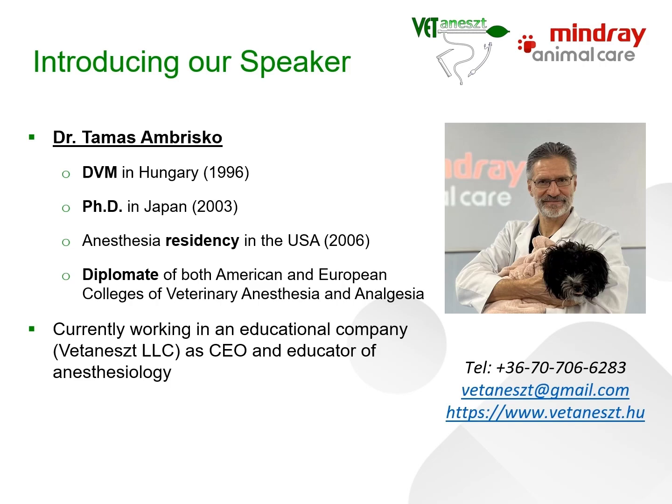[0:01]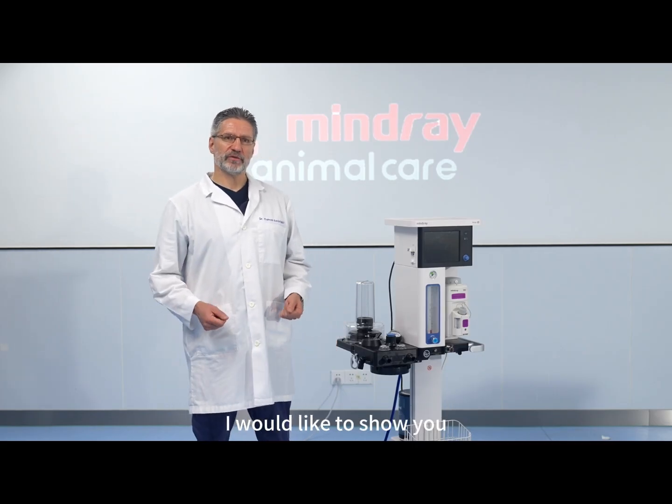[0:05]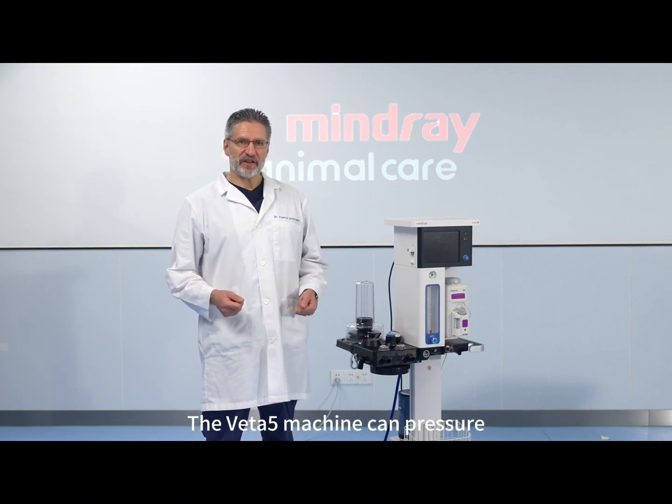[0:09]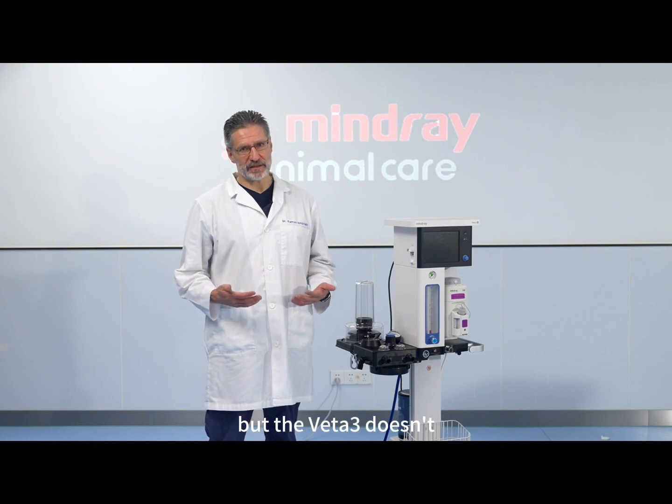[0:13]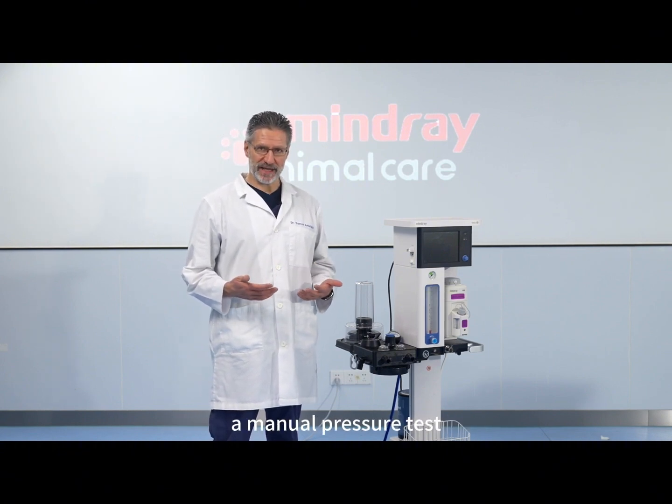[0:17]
In this video, I would like to show you the manual pressure test of the breathing system. The Veta 5 machine can pressure test the circuit automatically, but the Veta 3 doesn't. Hence, you need to be able to perform a manual pressure test.
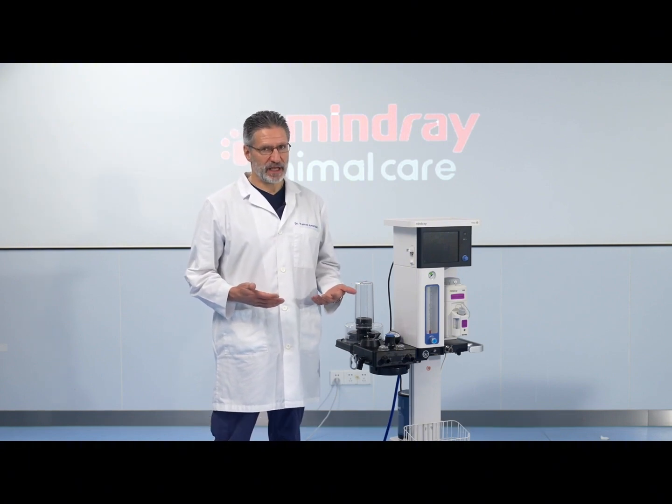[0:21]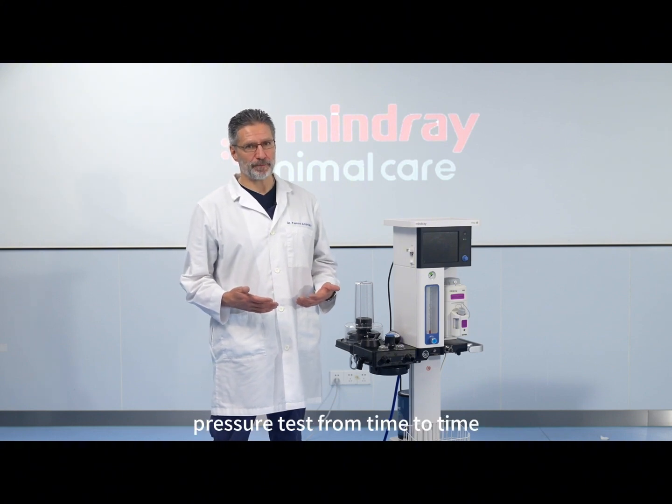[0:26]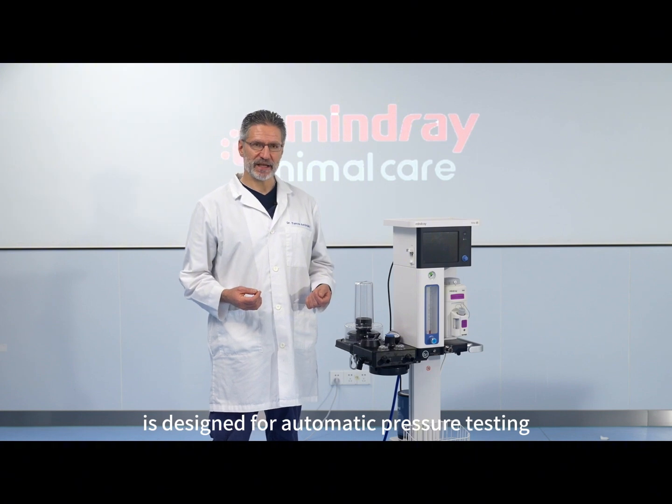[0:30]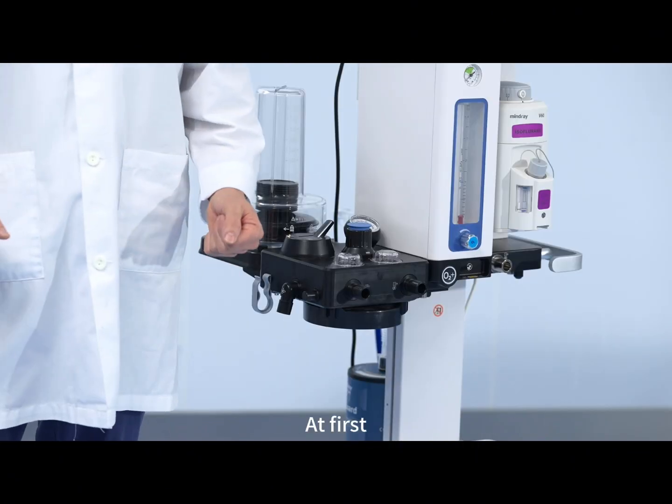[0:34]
Nevertheless, even after the automatic pressure test of the Veta 5, I recommend also performing a manual pressure test from time to time. Although the Veta 5 is designed for automatic pressure testing, a manual pressure test is still possible and useful. At first, you should properly assemble the whole breathing system.
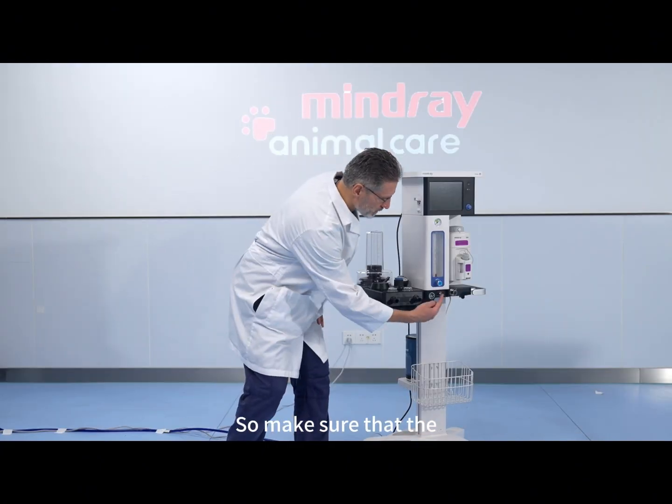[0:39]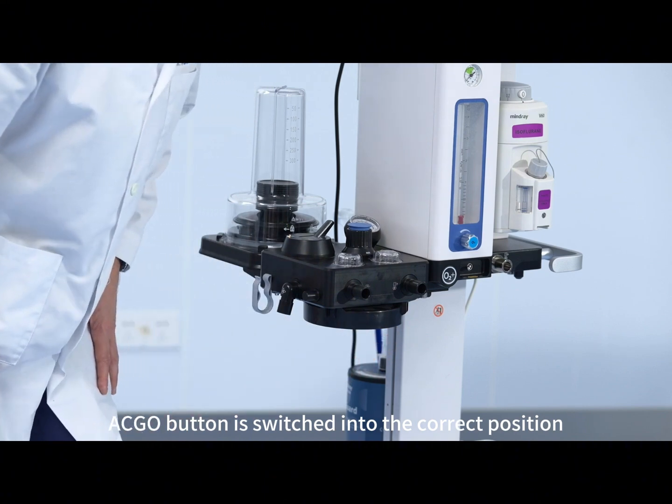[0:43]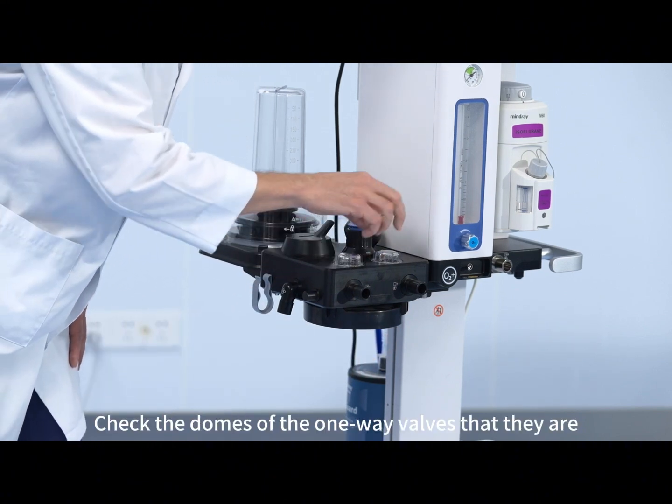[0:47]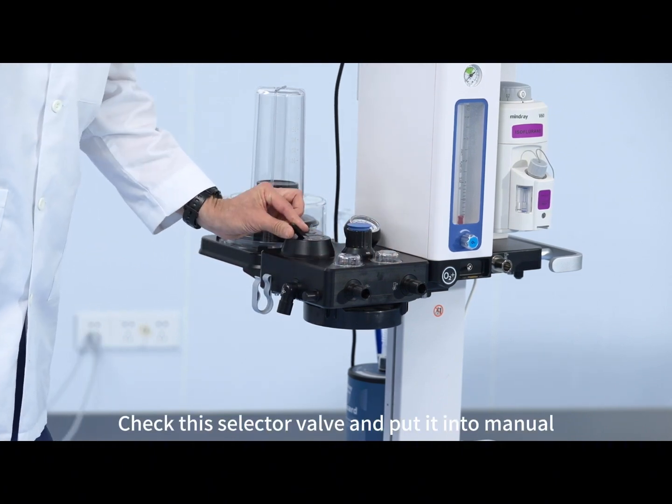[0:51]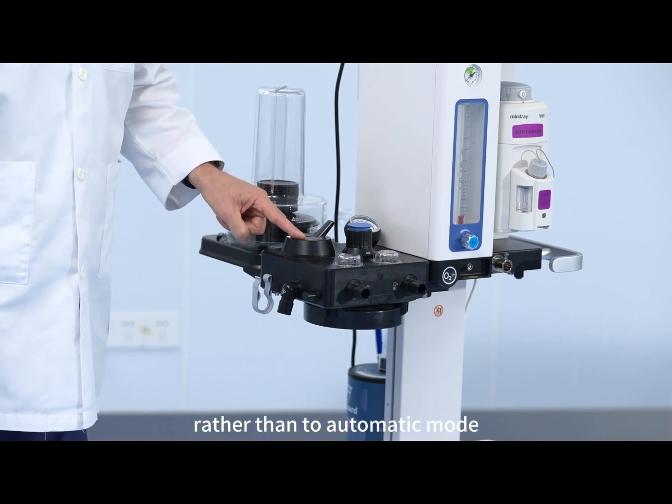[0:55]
So make sure that the ACGO button is switched into the correct position. Check the domes of the one-way valves that they are secured in position. Check this selector valve and put it into manual rather than automatic mode.
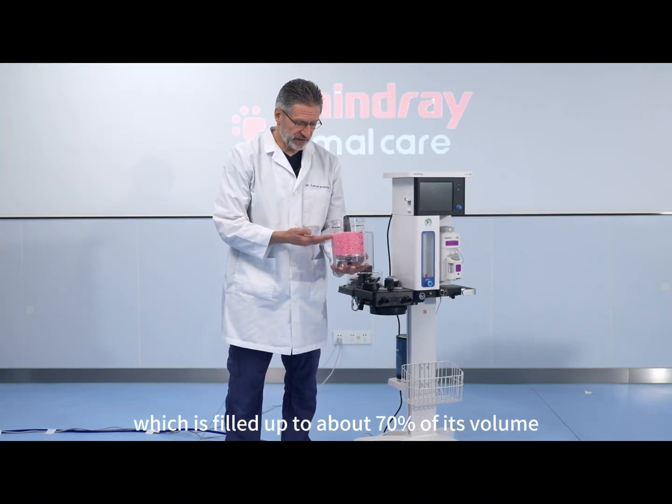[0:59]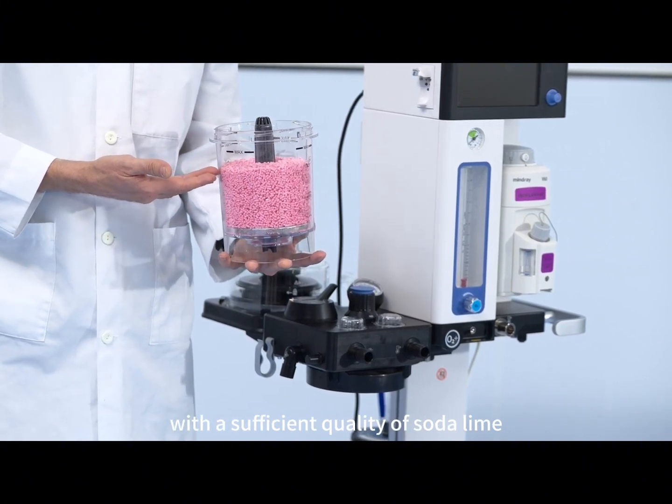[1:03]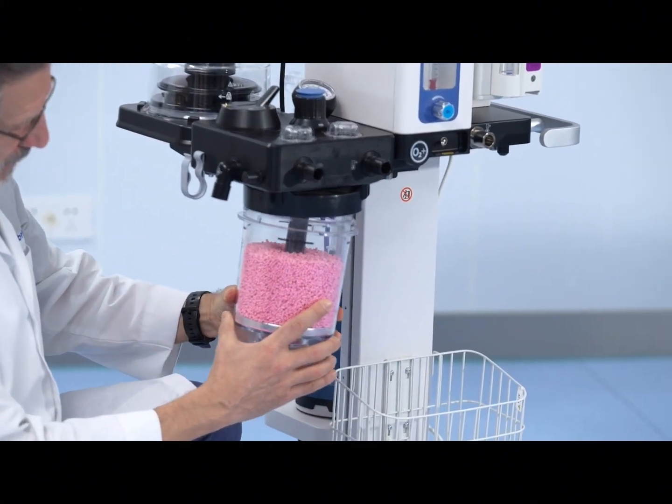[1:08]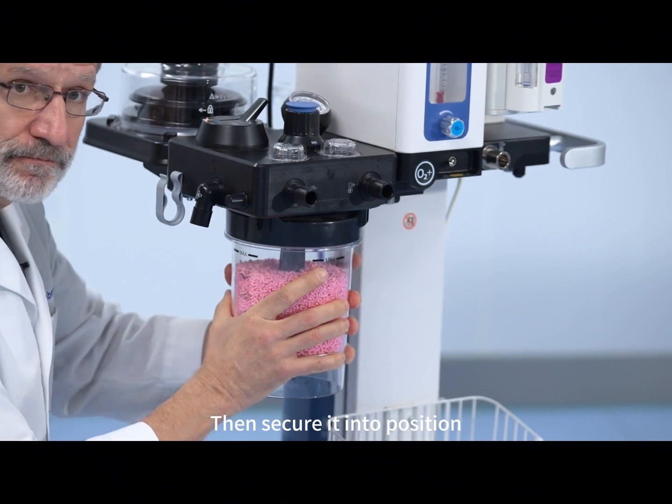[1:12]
You should have a soda lime canister which is filled up to about 70% of its volume with a sufficient quality of soda lime. Then secure it into position, make sure it's airtight.
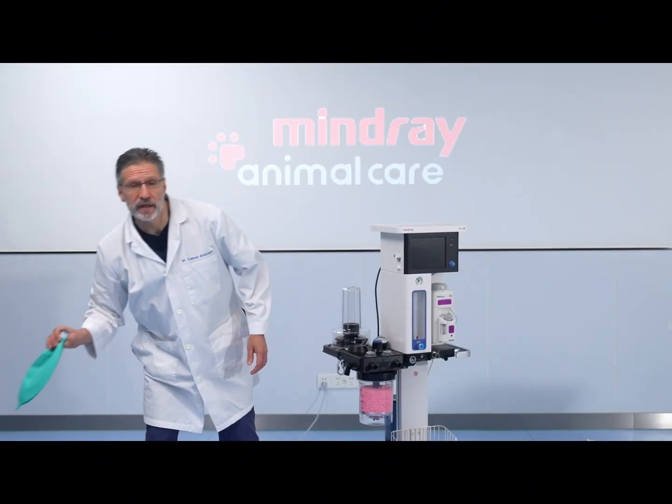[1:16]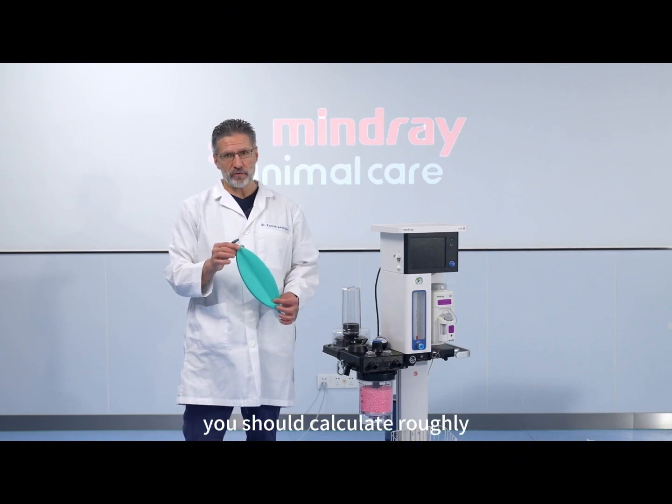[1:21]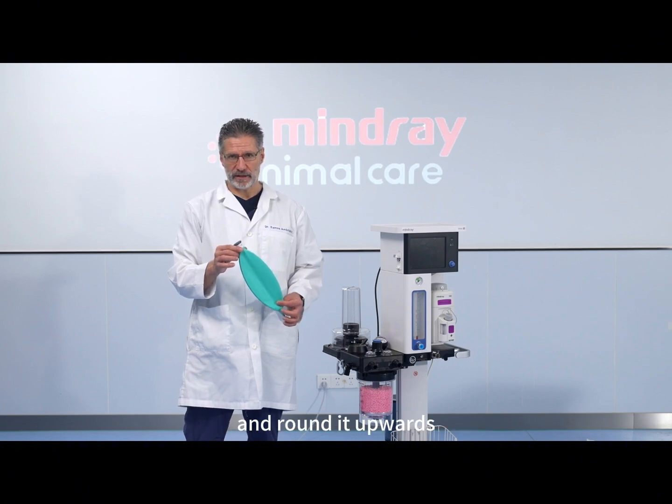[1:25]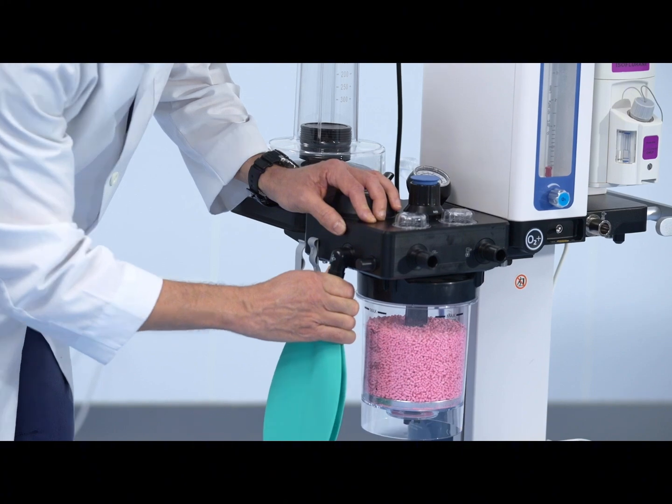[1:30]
Then you should pick an appropriately sized breathing bag. You should calculate roughly 1 liter for every 10 kg of body weight and round it upwards. Secure it into position nice and tight.
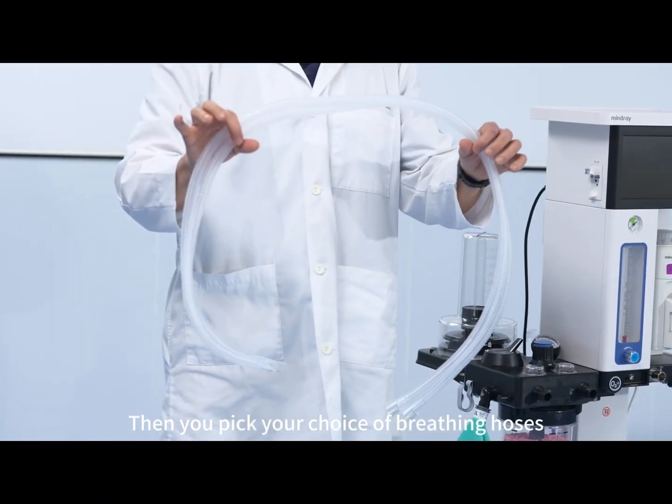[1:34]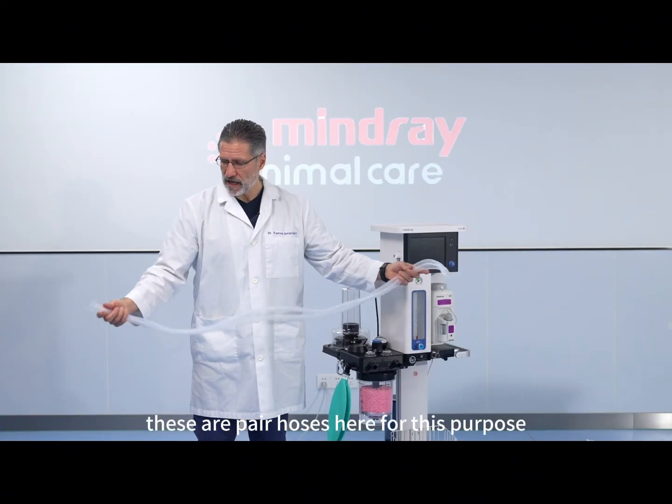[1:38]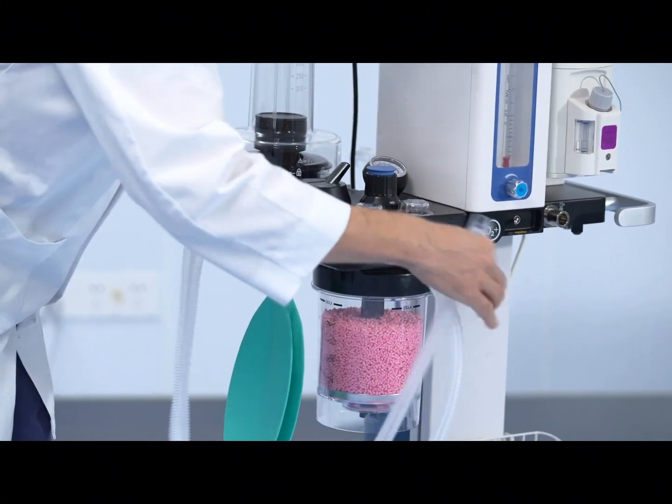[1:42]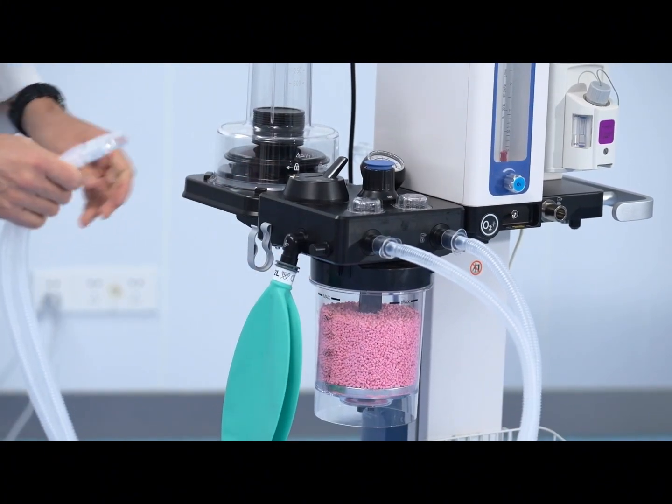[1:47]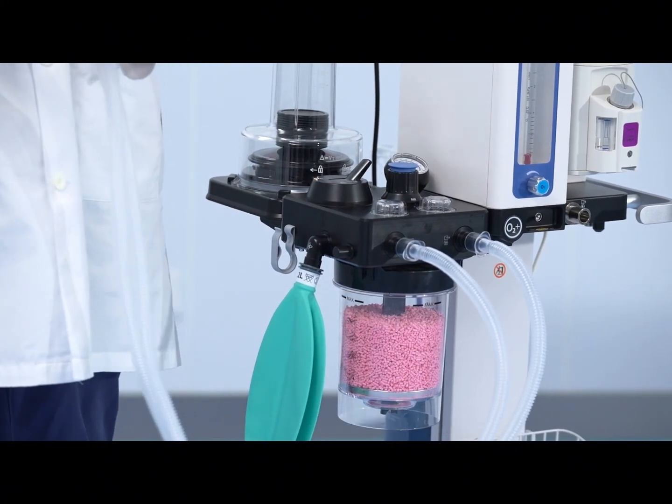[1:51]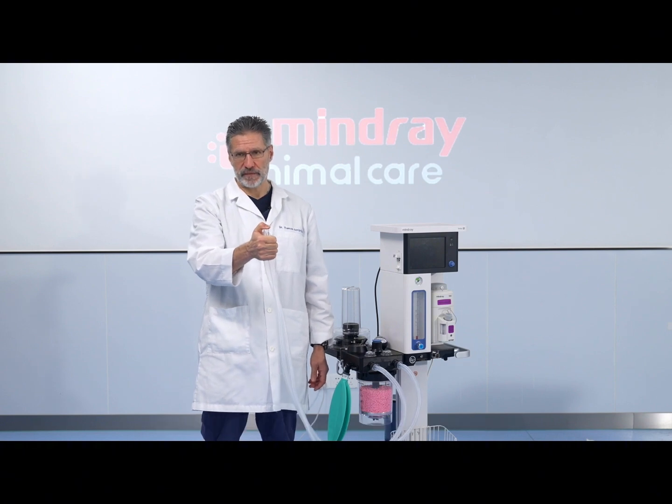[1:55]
Then you pick your choice of breathing hoses. These are paired hoses here for this purpose. Plug them into the inspiratory and the expiratory hose port, and then you have two choices. Classically, you plug in the Y-piece with your finger to make the system closed airtight.
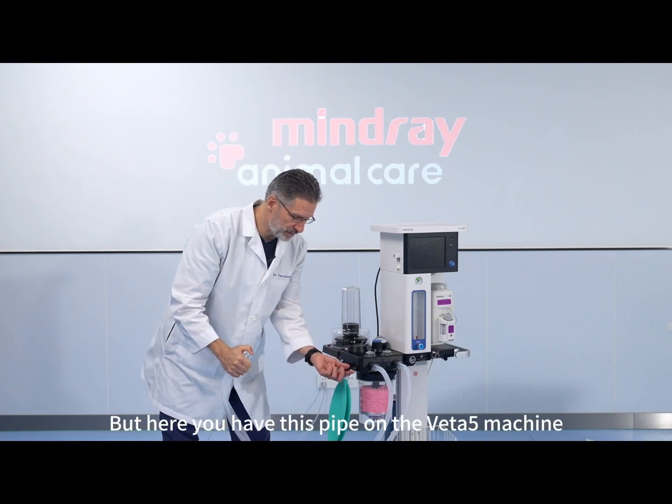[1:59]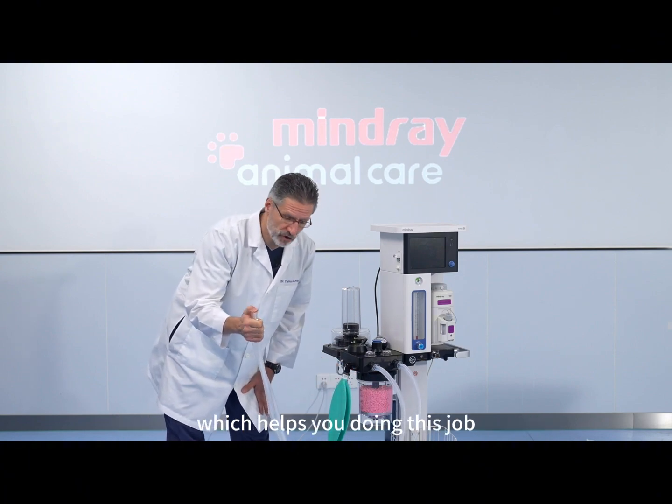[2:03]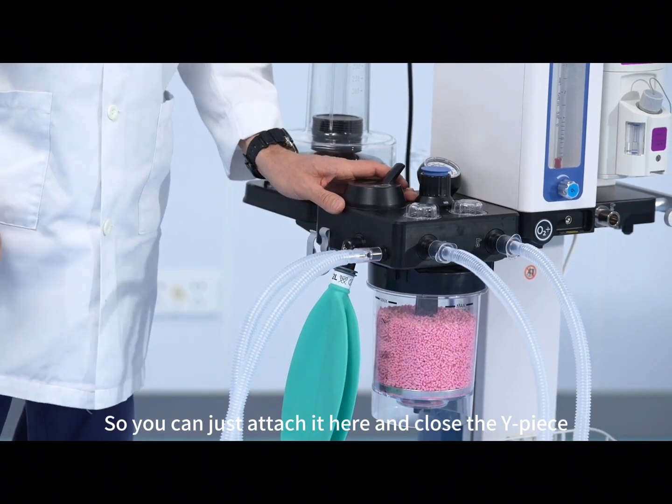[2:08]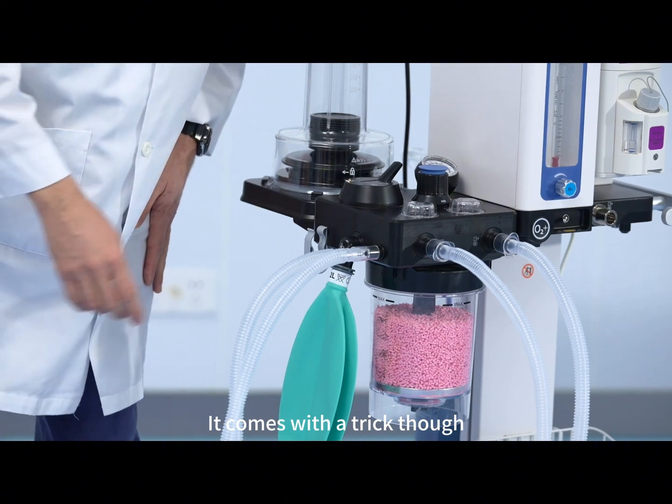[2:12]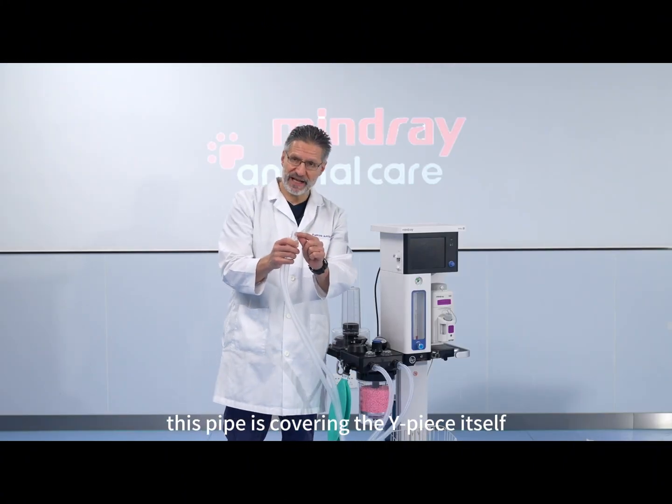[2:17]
But here you have this pipe on the Veta 5 machine which helps you do this job. So you can just attach it here and close the Y-piece airtight. It frees up your hand. It comes with a trick though. This pipe is covering the Y-piece itself.
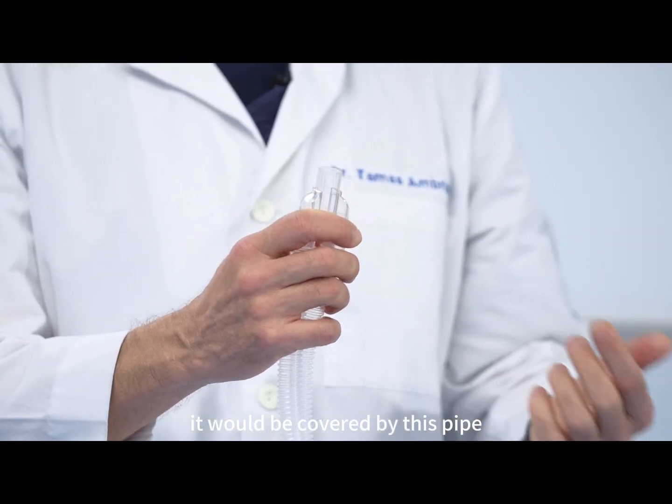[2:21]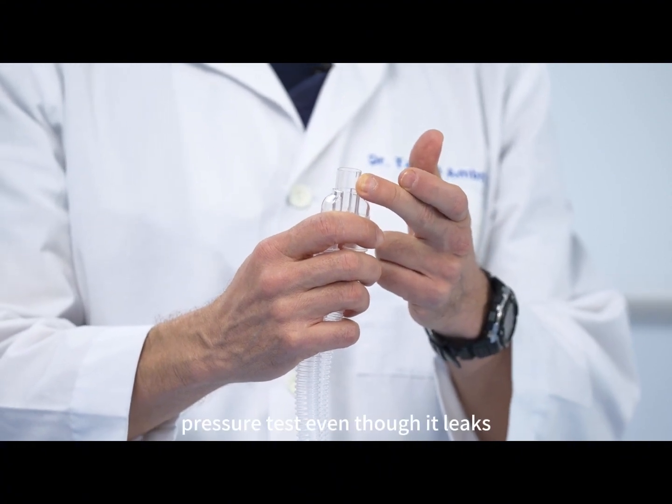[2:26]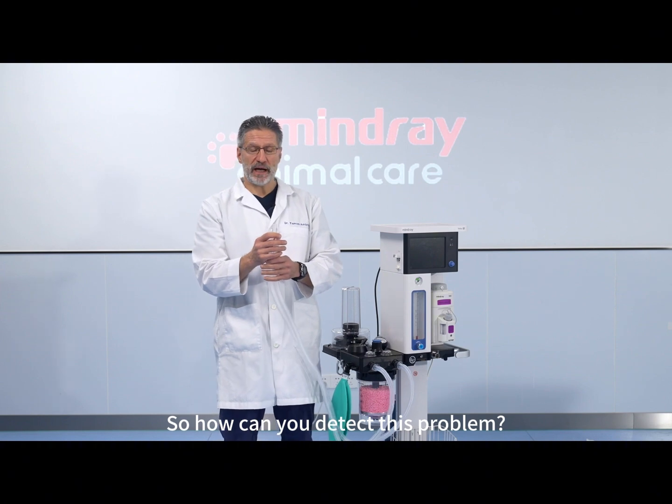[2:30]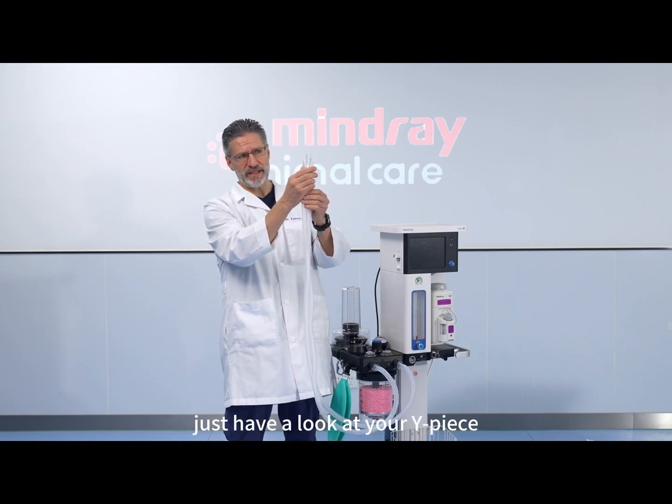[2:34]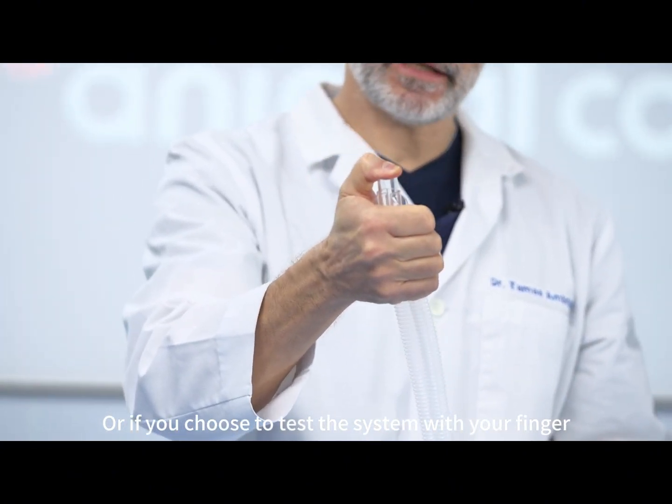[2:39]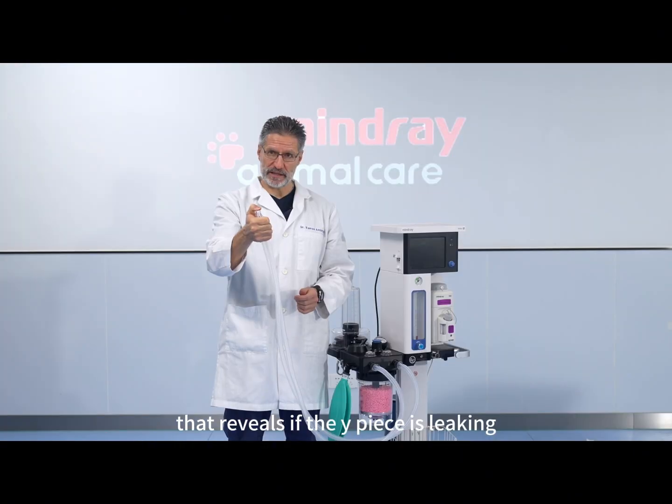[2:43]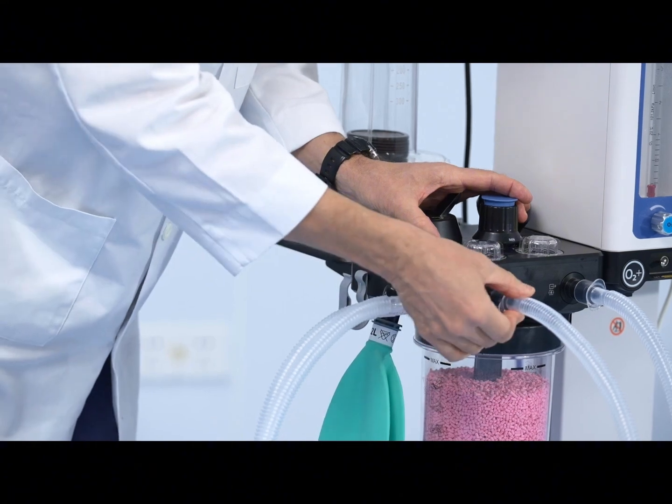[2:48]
So if you have a small crack on the Y-piece, it would be covered by this pipe and it would pass the pressure test even though it leaks. So how can you detect this problem? Very simple, just have a look at your Y-piece and you will see the crack. Or if you choose to test the system with your finger, that reveals if the Y-piece is leaking. For now, let's just use this pipe. It makes the pressure test so much easier.
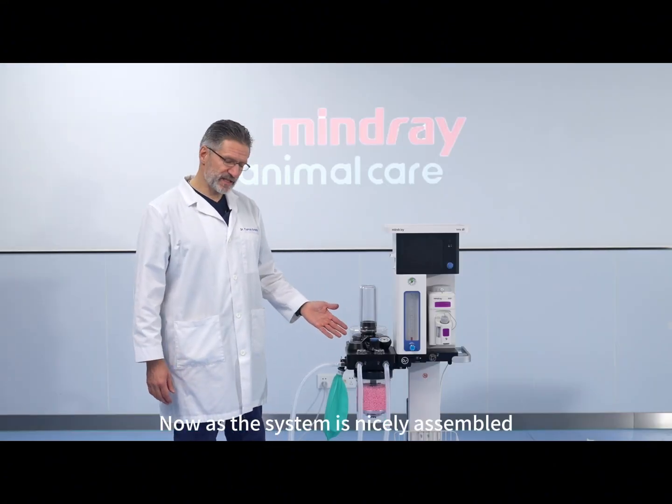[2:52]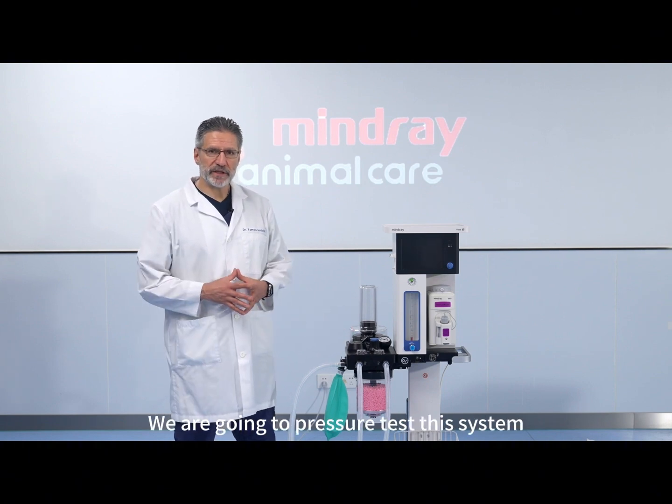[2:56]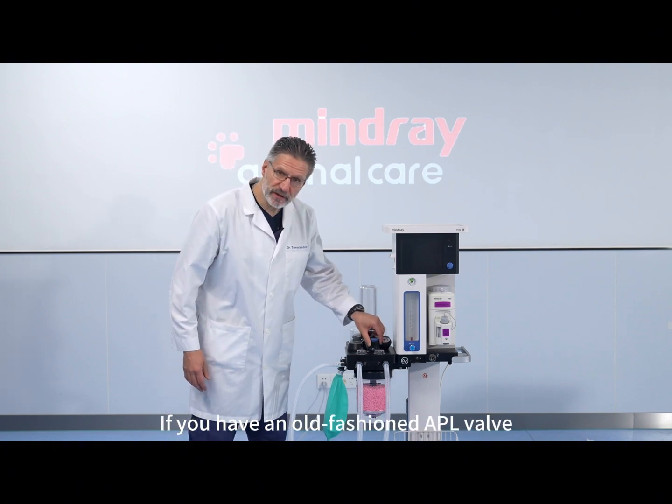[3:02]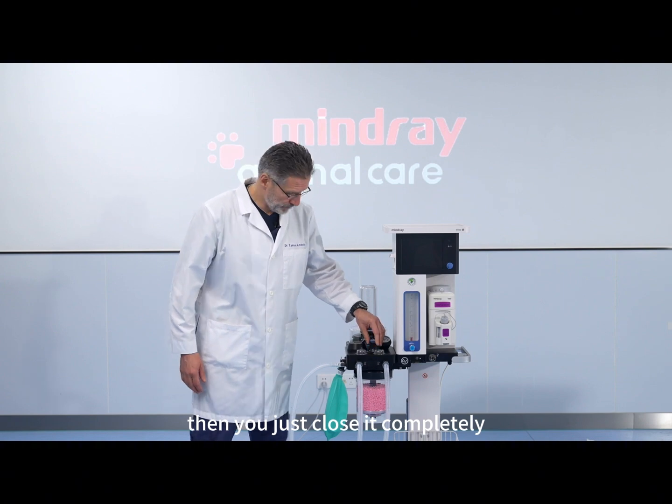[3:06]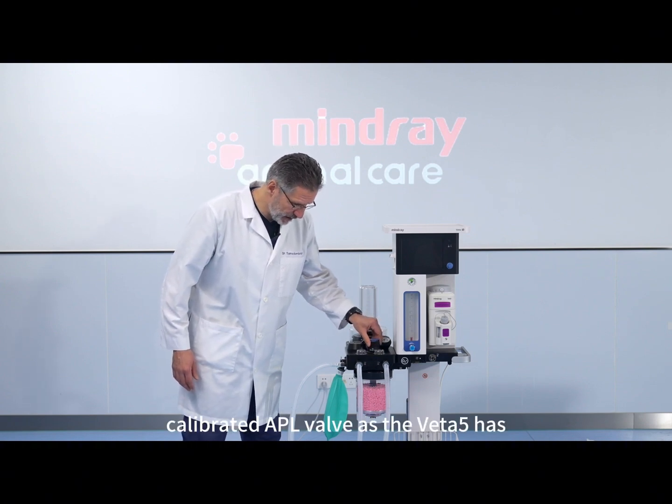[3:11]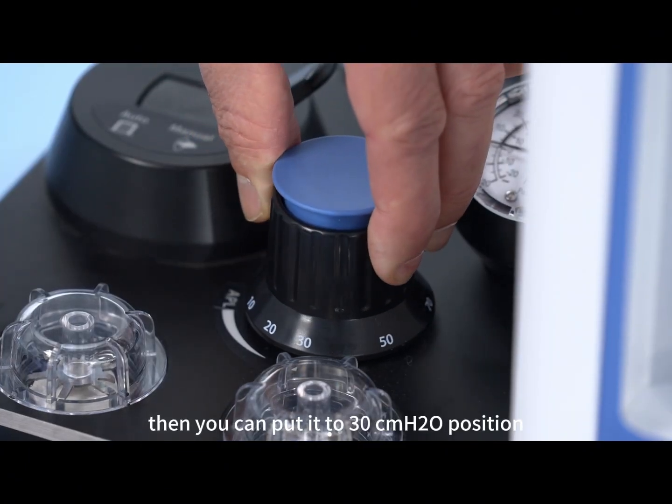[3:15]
Now, as the system is nicely assembled, let's do the actual pressure test. We are going to pressure test this system at about 30 centimeters of water pressure. If you have an old-fashioned APL valve, then you just close it completely. But if you have such a nicely calibrated APL valve as the Veta 5 has, then you can put it to the 30 centimeters of water position.
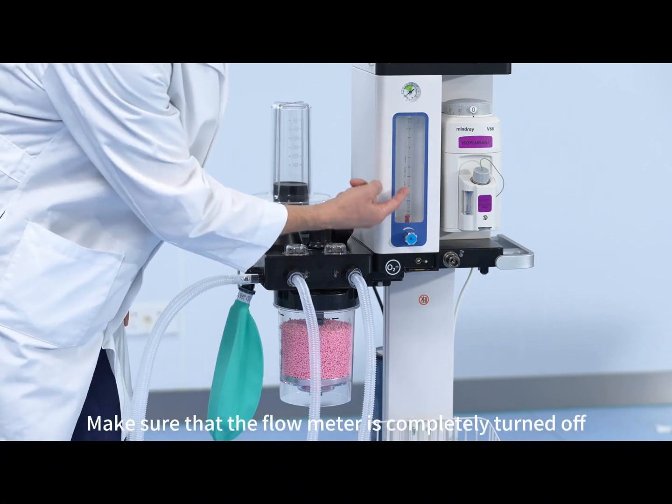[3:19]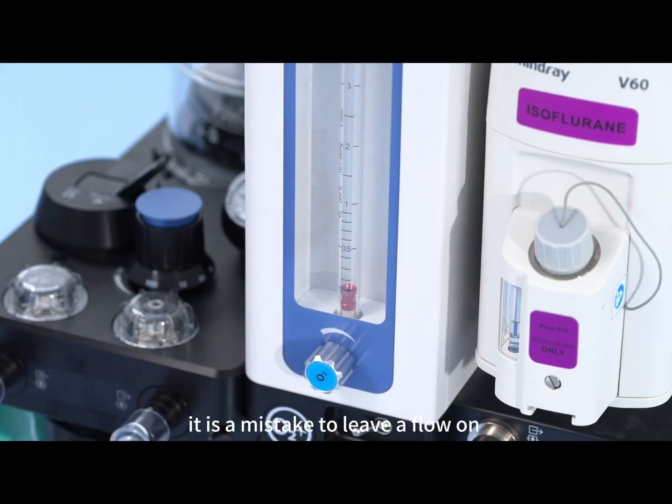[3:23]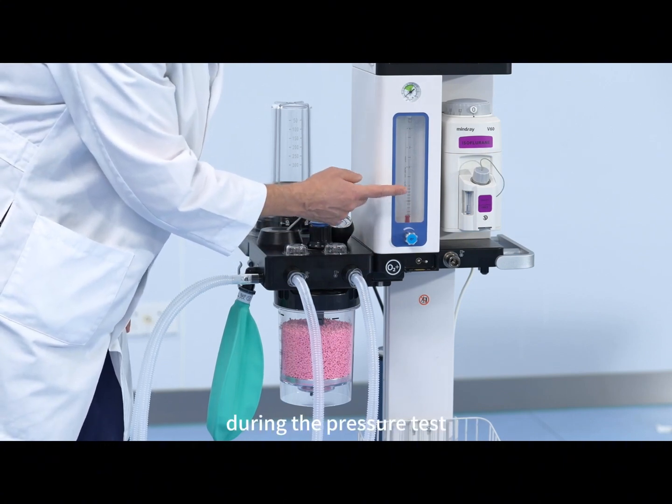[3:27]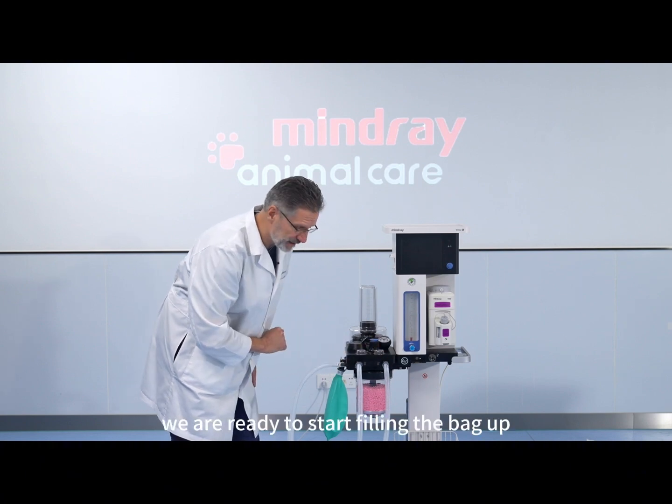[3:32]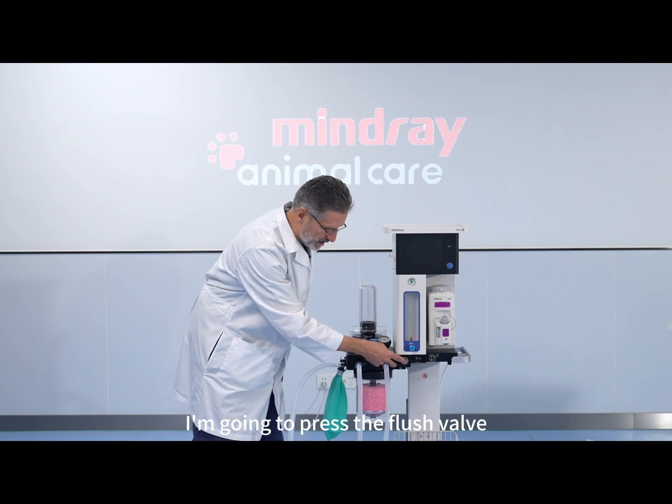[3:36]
Make sure that the flow meter is completely turned off. It is a mistake to leave a flow on during the pressure test. Now we are ready to start filling the bag up. As you see, this is empty now. I'm going to press the flush valve to fill this up.
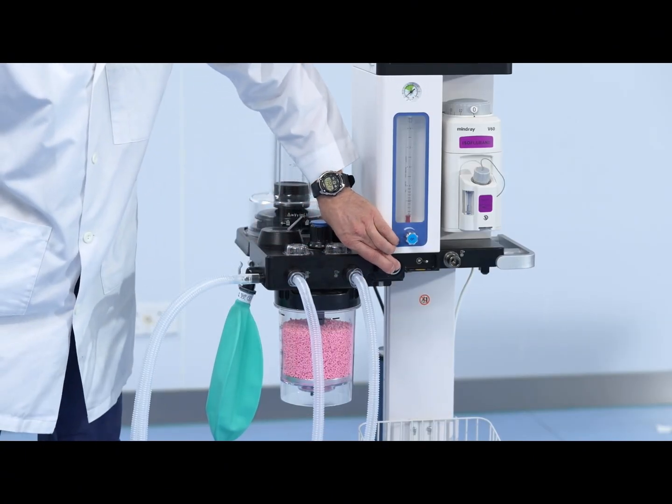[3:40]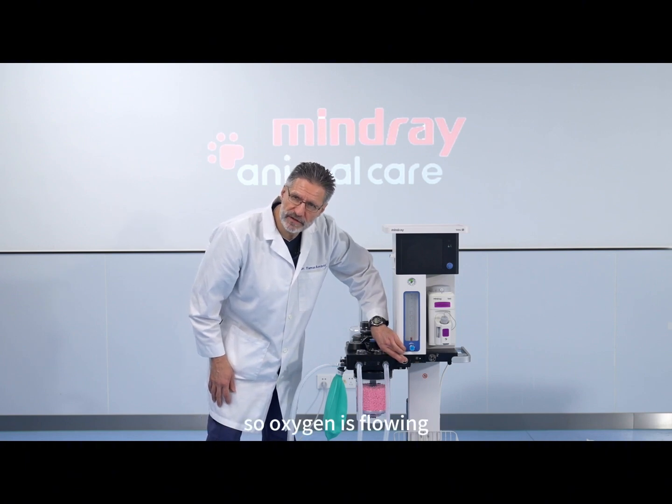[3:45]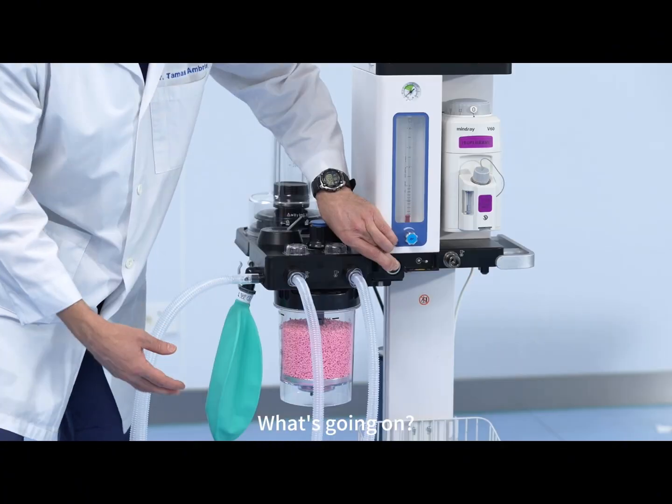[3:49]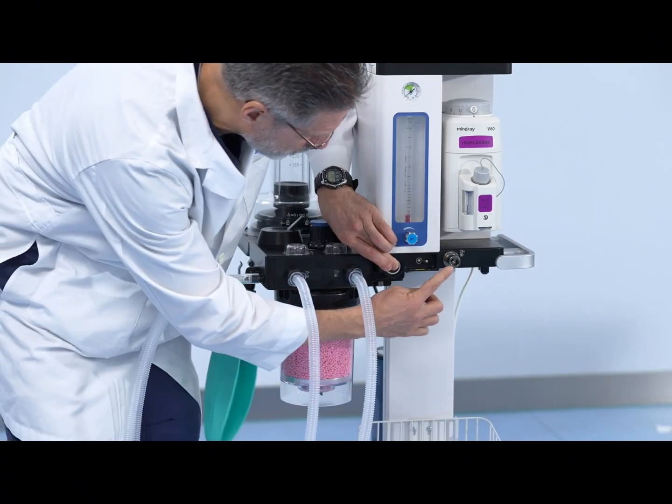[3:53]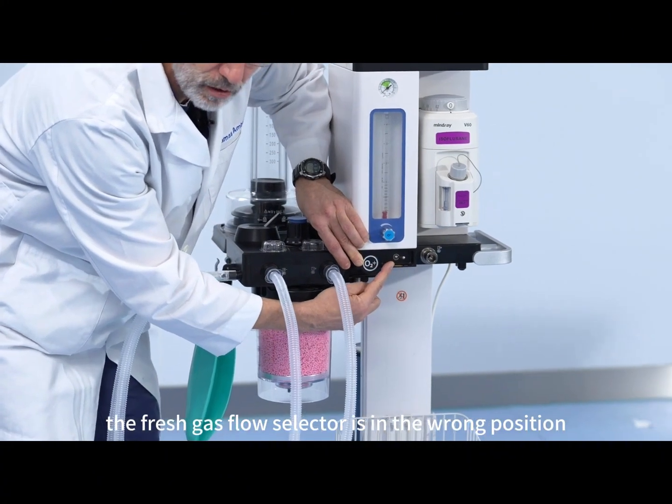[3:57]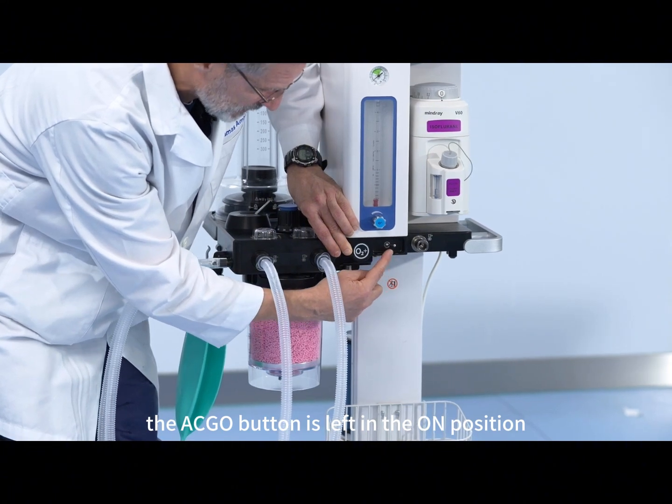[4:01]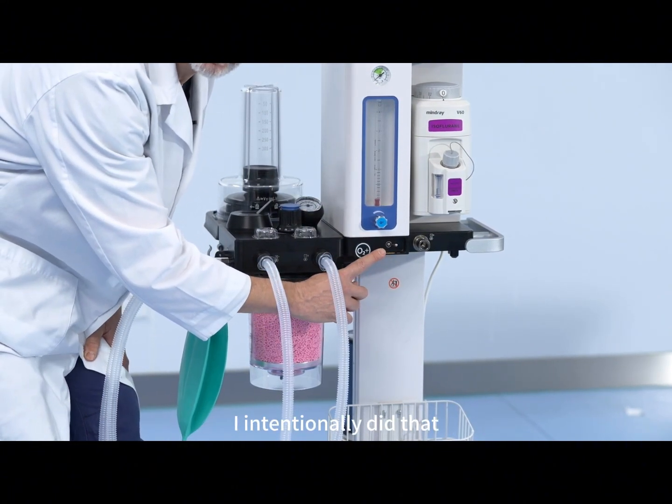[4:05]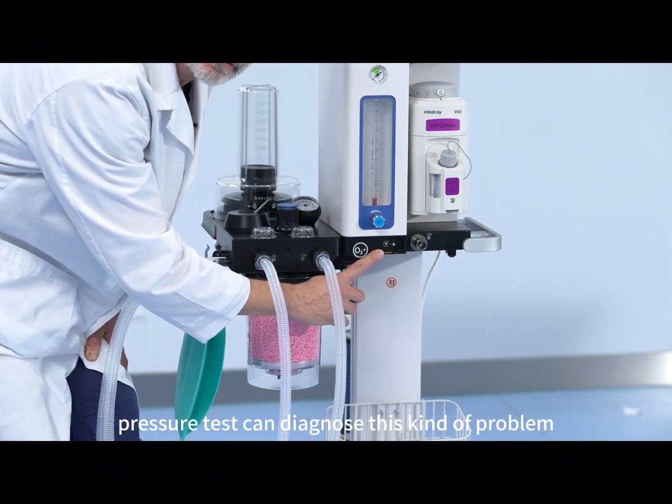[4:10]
You hear there is a hissing noise? So oxygen is flowing, but the bag is not filling. What's going on? You see, the fresh gas flow selector is in the wrong position. The ACGO button is left in the on position. I intentionally did that to show you how the pressure test can diagnose this kind of problem.
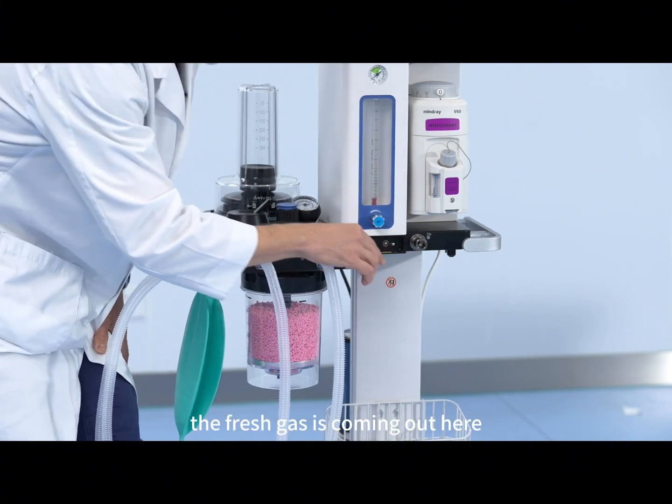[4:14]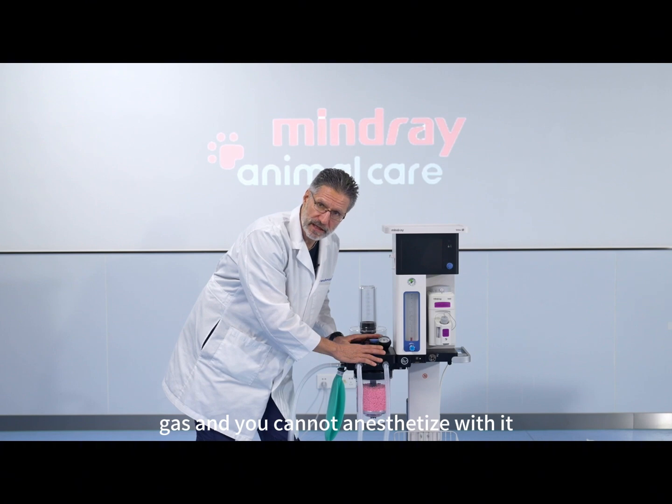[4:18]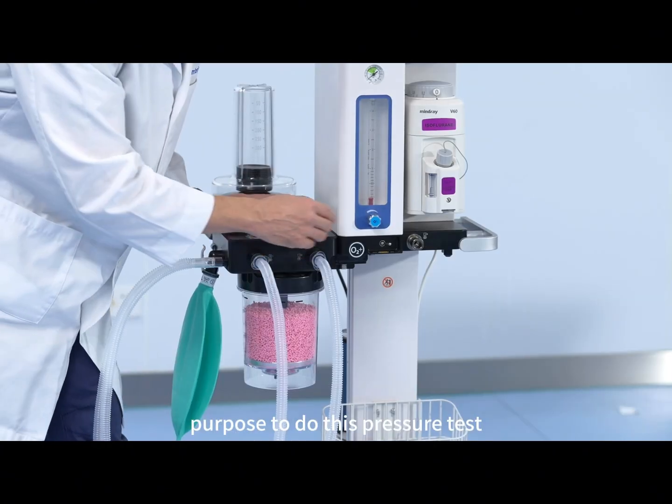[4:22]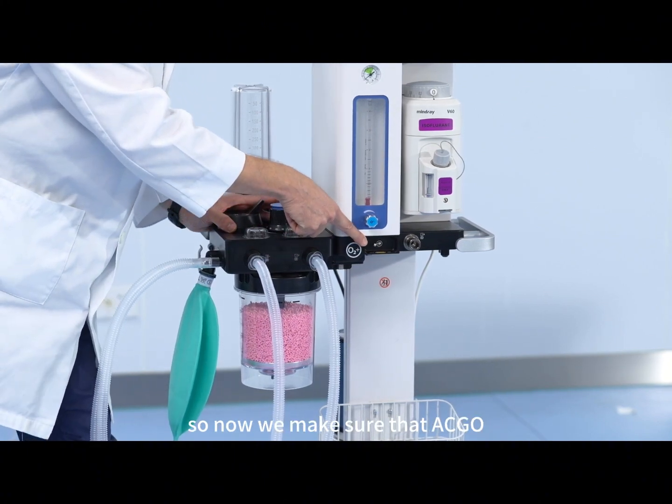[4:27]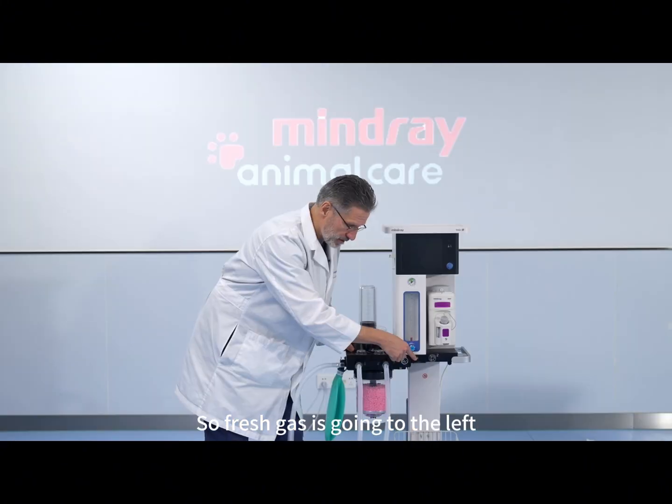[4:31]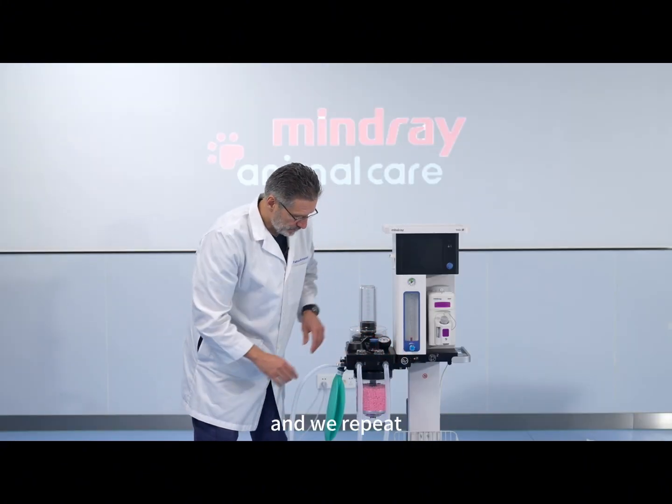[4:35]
So if you do this, the fresh gas is coming out here and your breathing system is without the fresh gas and you cannot anesthetize with it. Yeah? That was one of the purposes of this pressure test, to make sure the whole system is functional. So now we make sure that ACGO is switched to the off position, so fresh gas is going to the left direction into the circuit, and we repeat filling up the bag again.
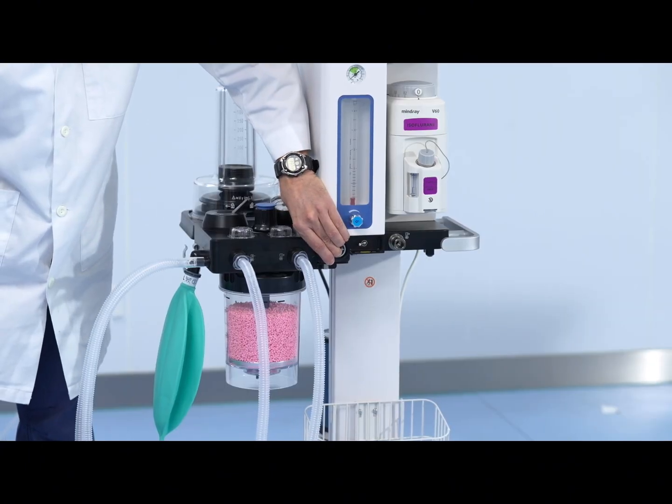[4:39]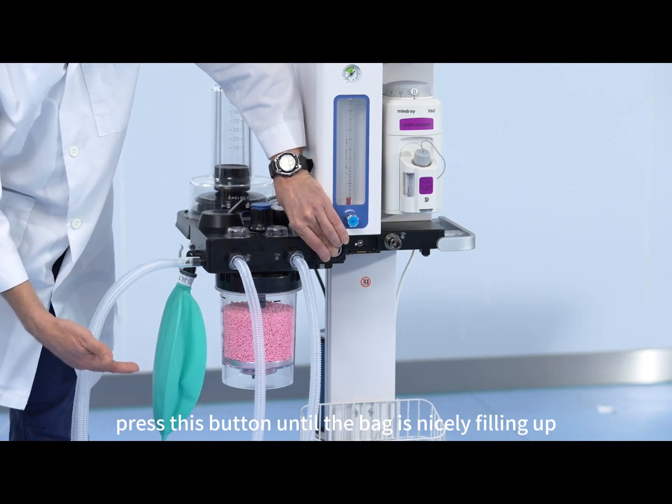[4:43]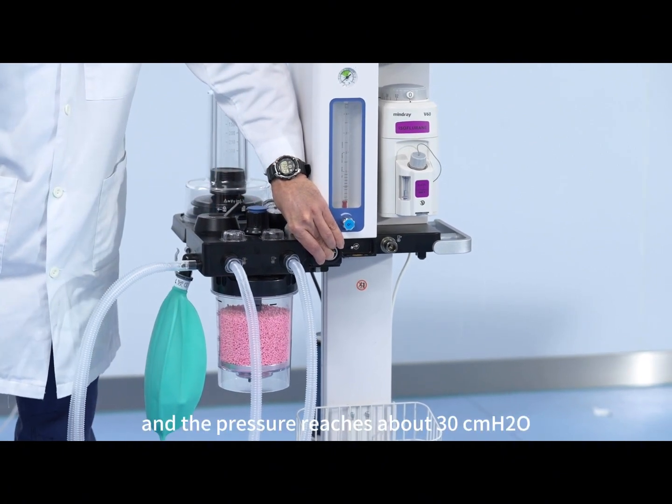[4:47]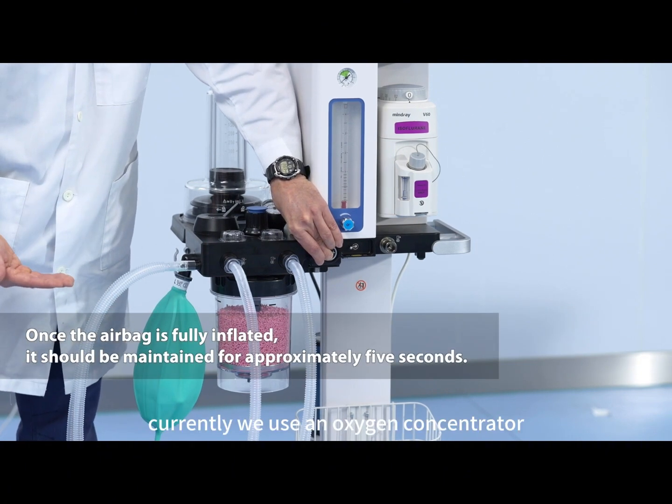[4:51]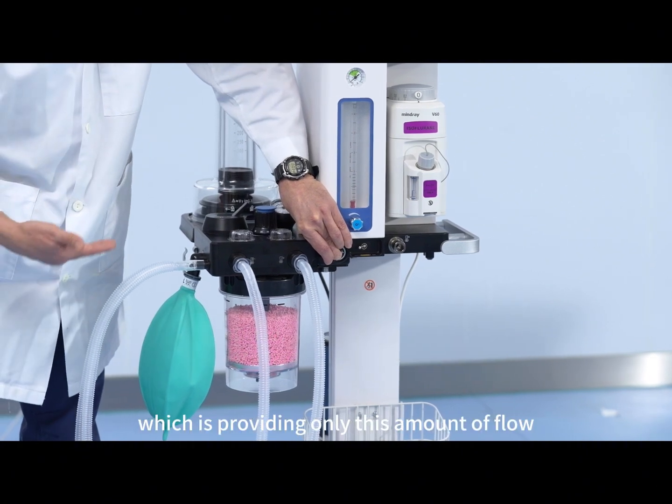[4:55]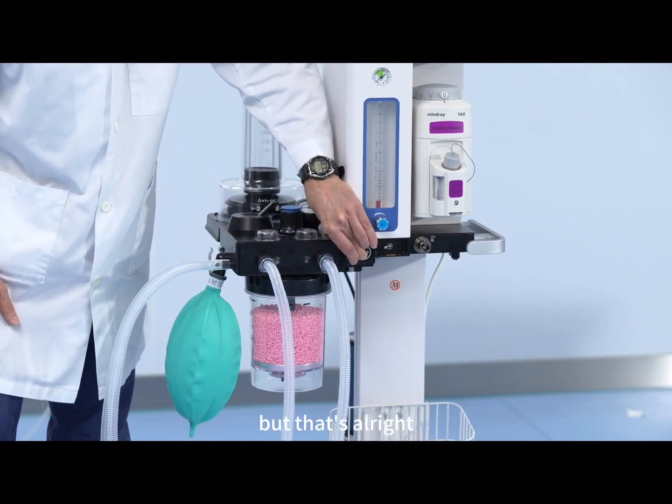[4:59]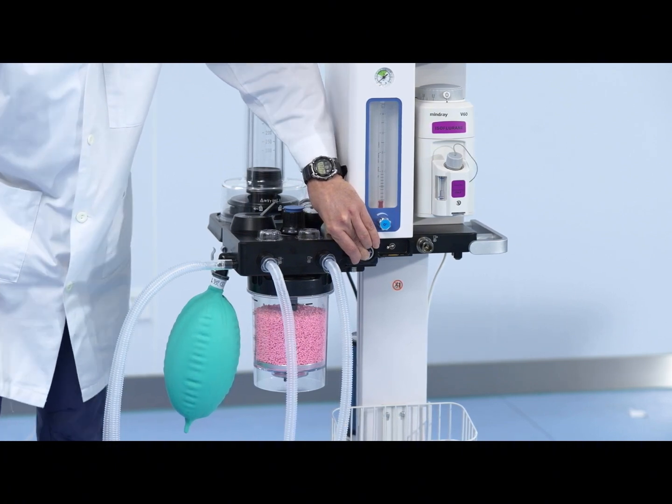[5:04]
And we press this button until the bag is nicely filling up and the pressure reaches about 30 centimeters of water. It takes some time because currently we use an oxygen concentrator which is providing only this amount of flow, but that's all right. Okay, now the pressure is increasing.
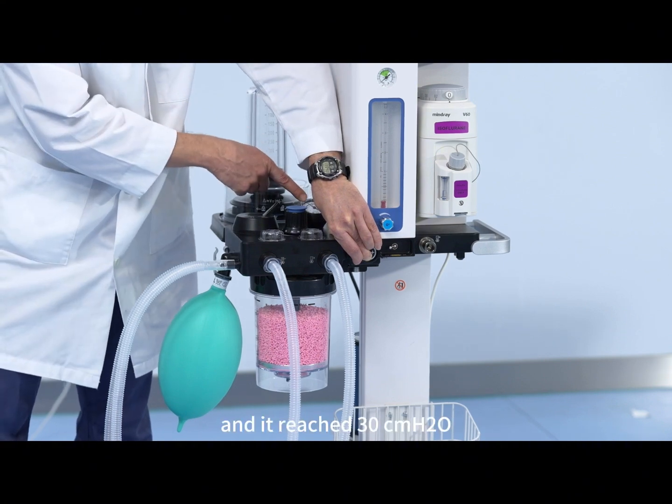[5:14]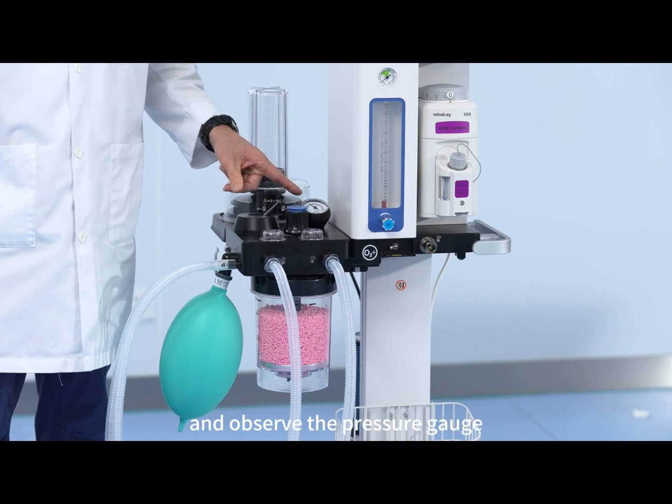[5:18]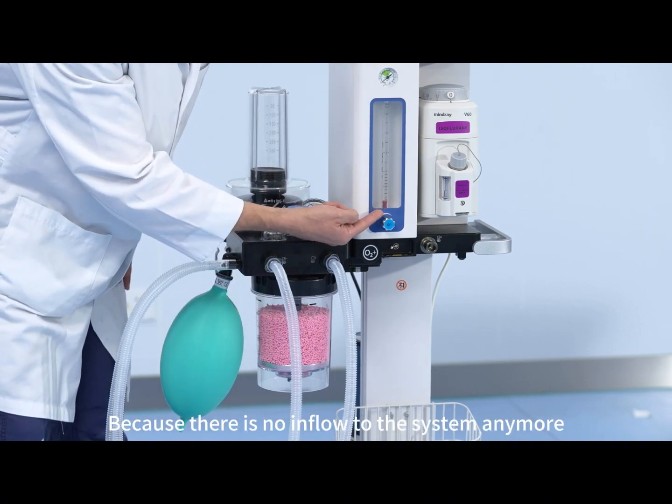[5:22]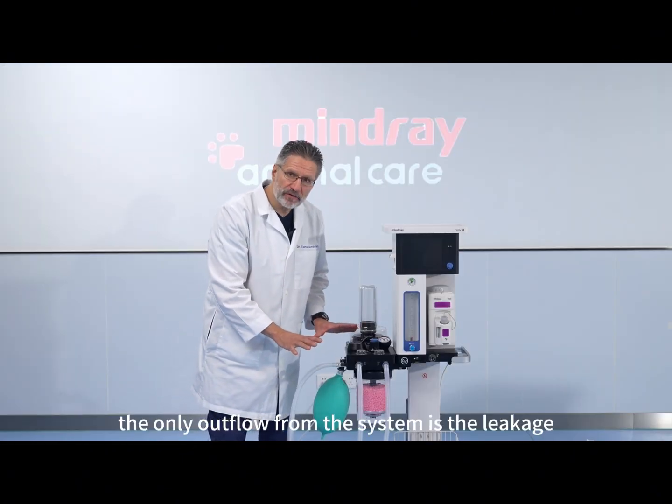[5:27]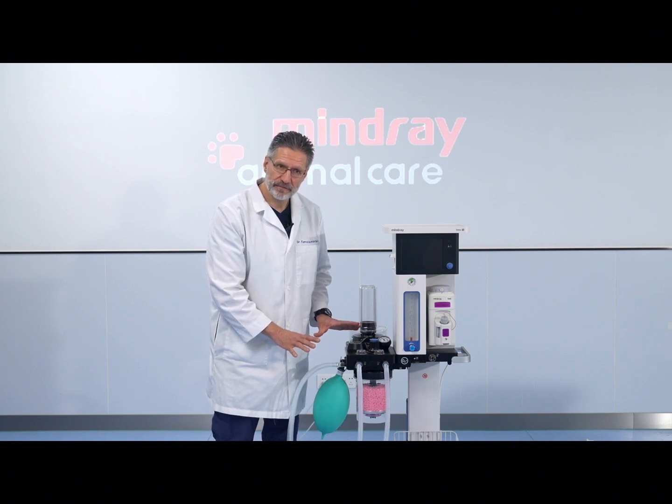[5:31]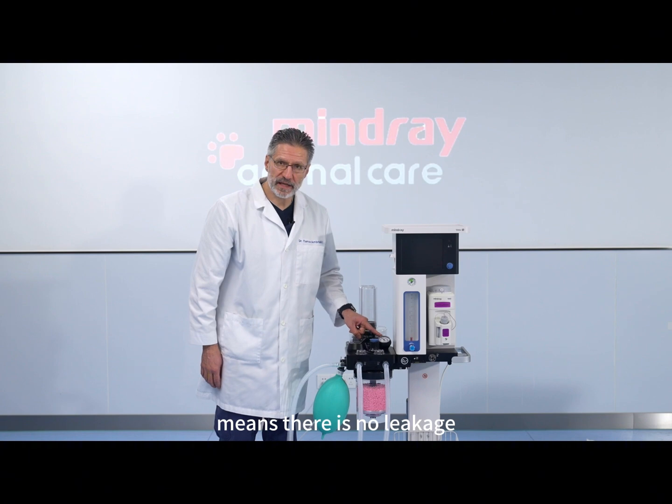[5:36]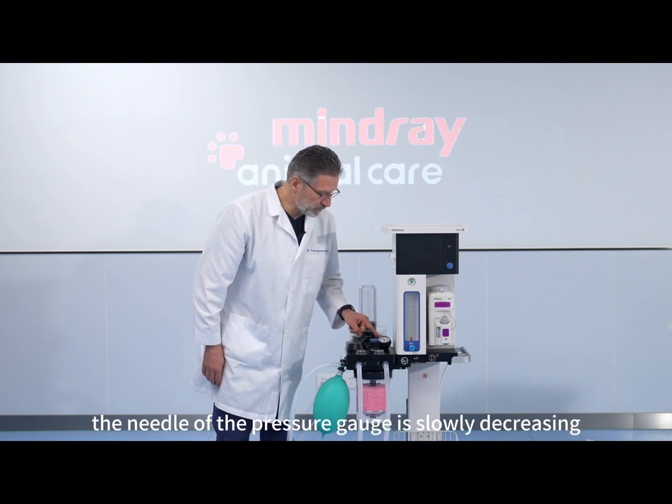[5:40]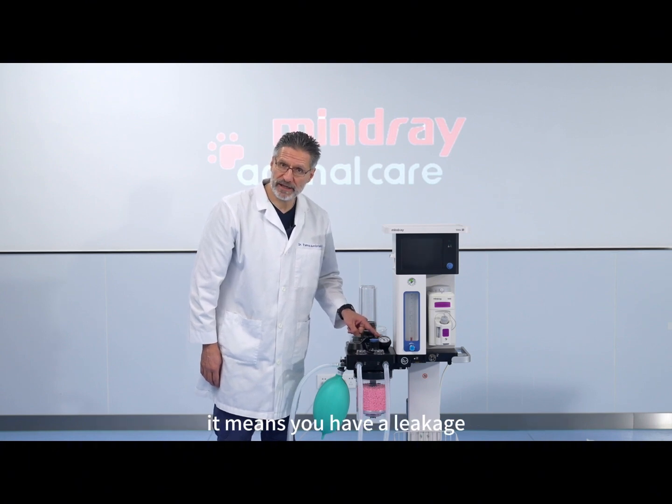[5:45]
And it reached 30 centimeters of water. Now I release the flush valve and observe the pressure gauge. Because there is no inflow to the system anymore, the only outflow from the system is the leakage, and that's what we are testing. So if the pressure is stable, it means there is no leakage. If the needle of the pressure gauge is slowly decreasing, it means you have a leakage.
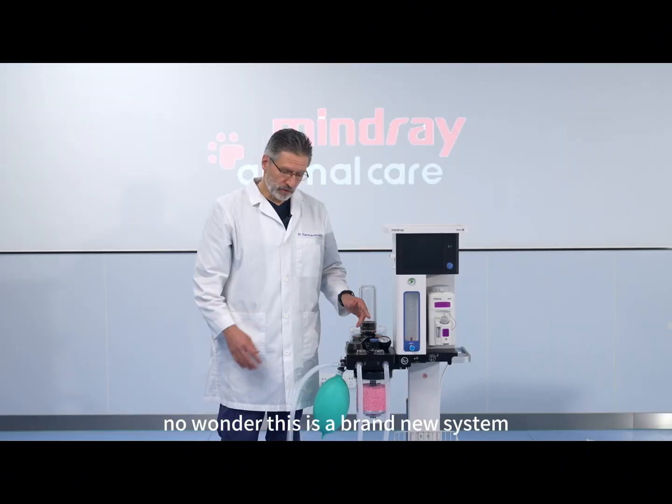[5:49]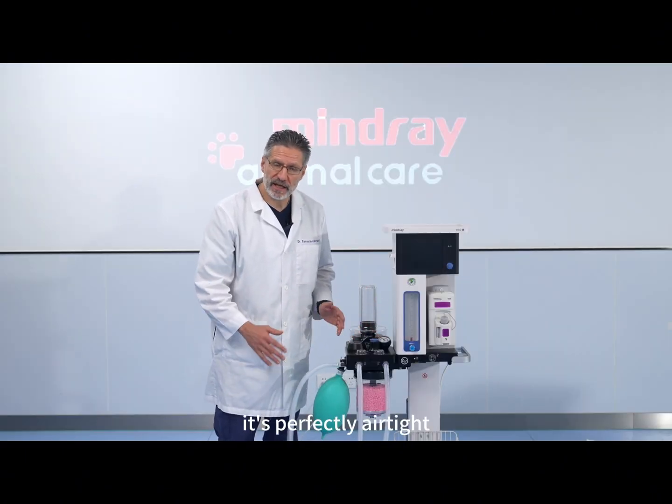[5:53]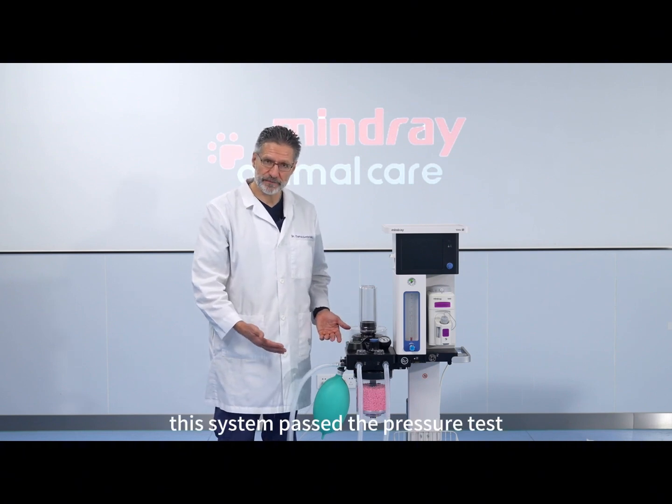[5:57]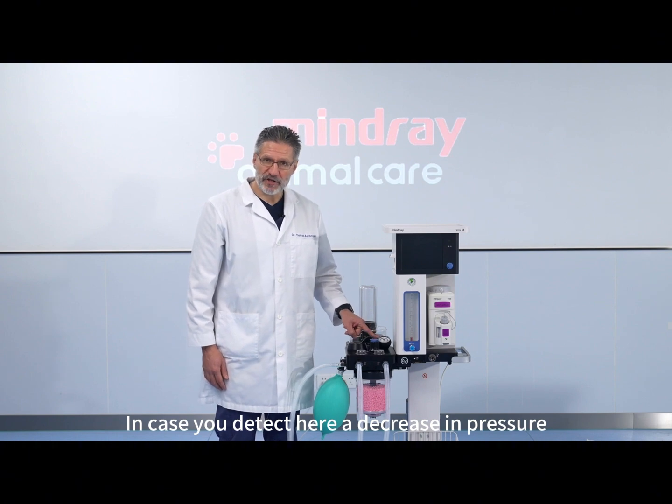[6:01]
In this case, it's perfectly stable. No wonder, this is a brand new system. Why would it leak? It's perfectly airtight. This system passed the pressure test. In case you detect a decrease in pressure here, it means you have a leak.
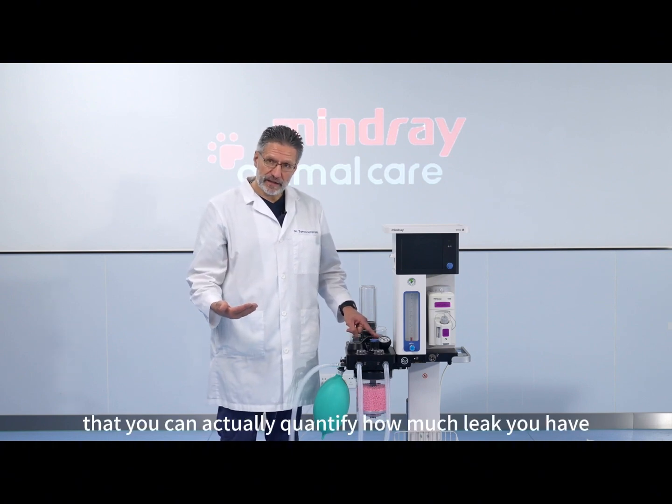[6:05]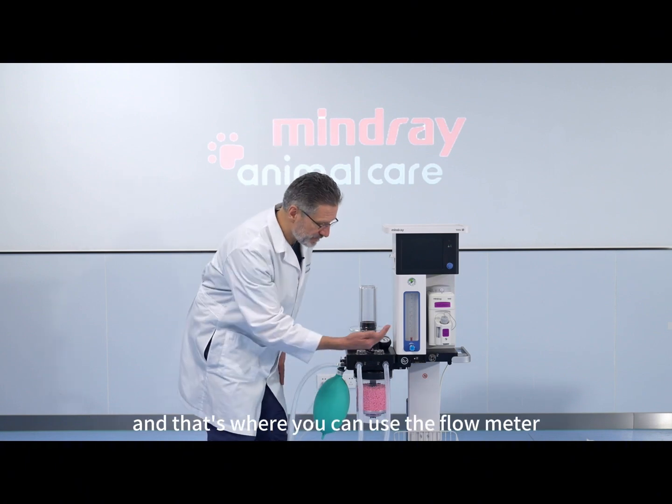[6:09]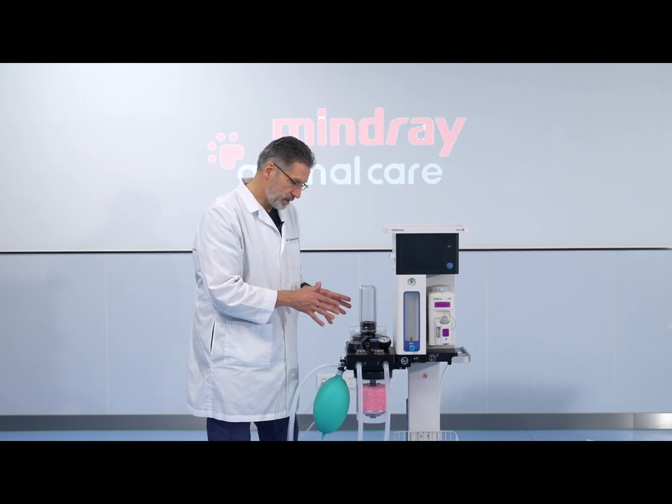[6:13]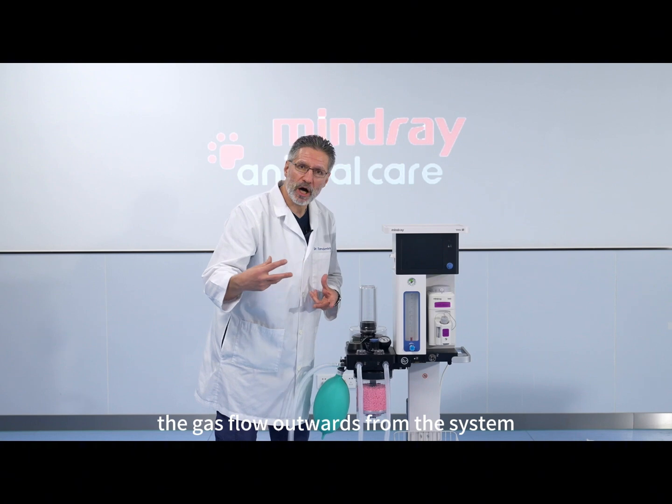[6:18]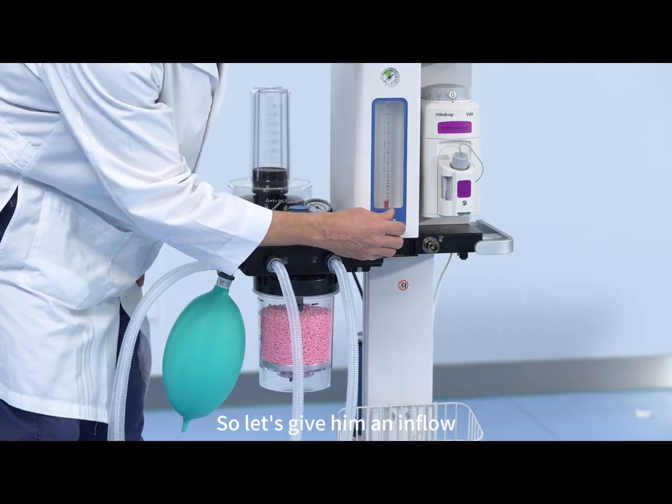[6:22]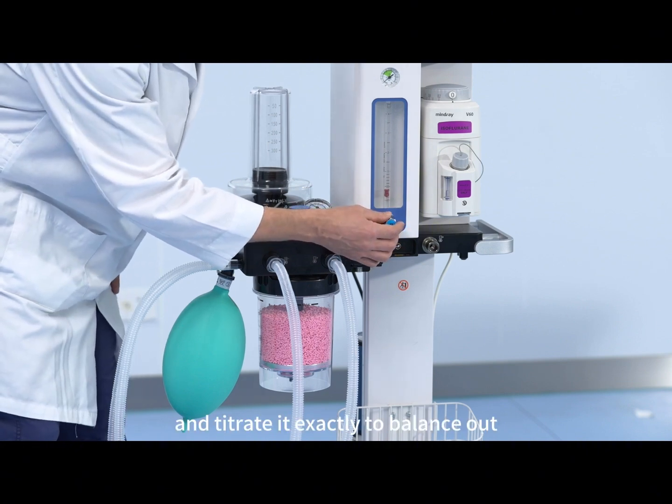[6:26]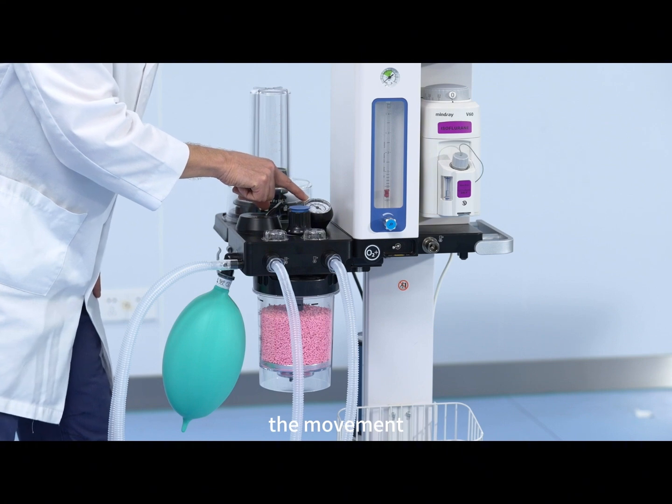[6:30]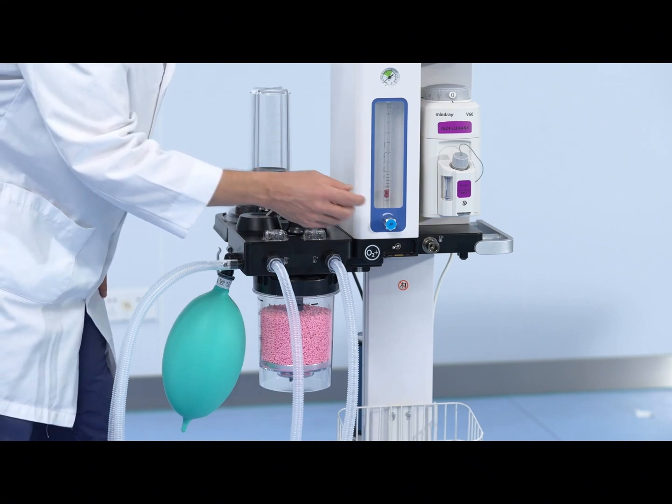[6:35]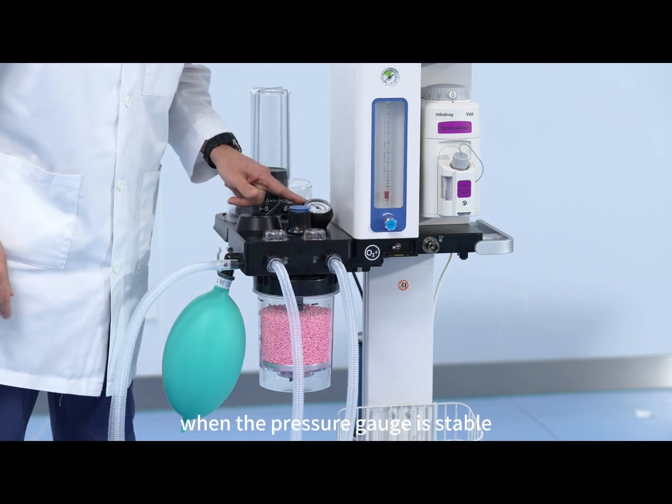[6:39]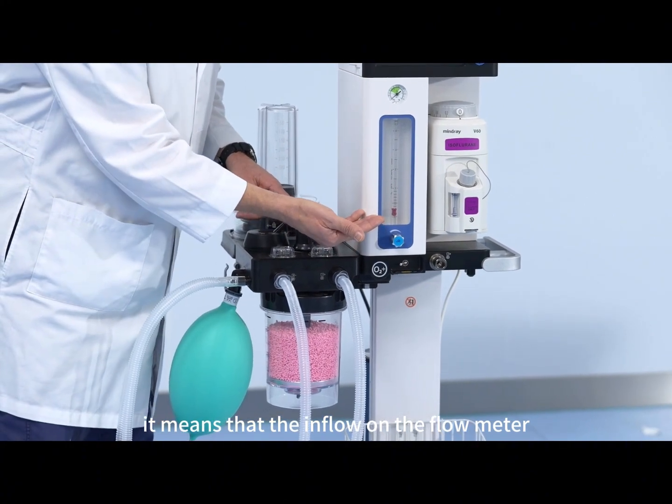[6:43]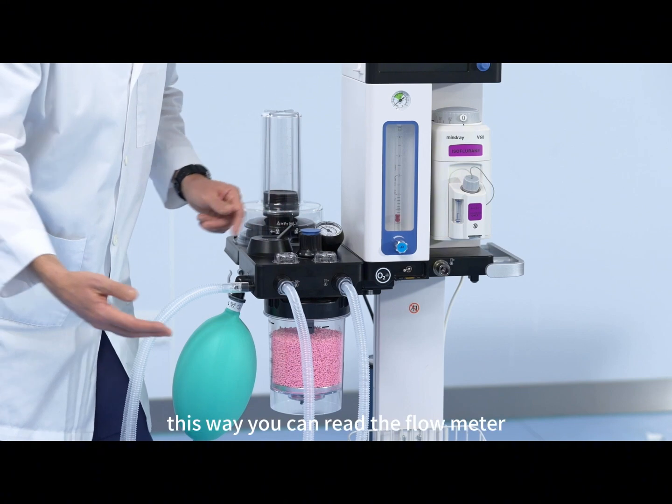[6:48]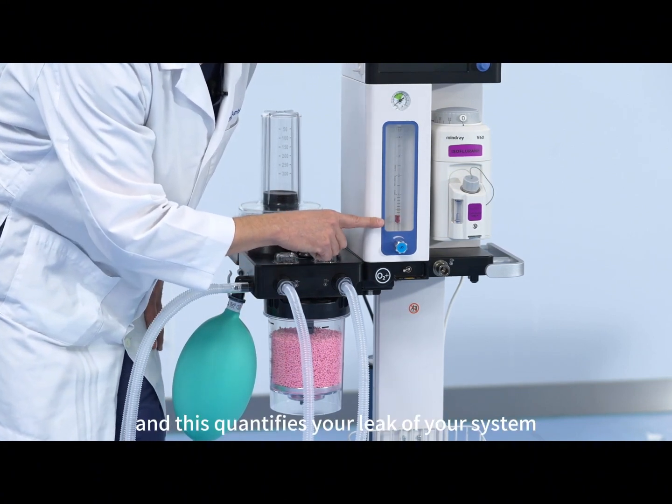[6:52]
There is a way that you can actually quantify how much leak you have, and that's where you can use the flow meter. So the leak is a gas flow outwards from the system. So let's give it an inflow with the flow meter and titrate it exactly to balance out the movement of the pressure gauge and stabilize the pressure in the system. When you find that exact position, when the pressure gauge is stable, it means that the inflow on the flow meter equals the leak, that is the outflow of your system. This way you can read the flow meter, and this quantifies the leak of your system.
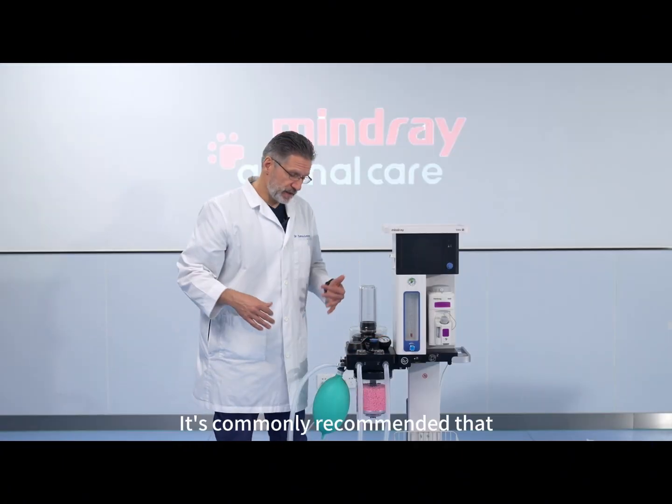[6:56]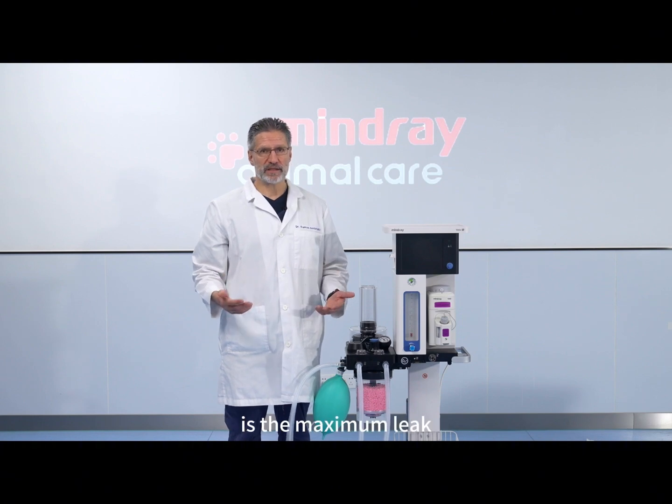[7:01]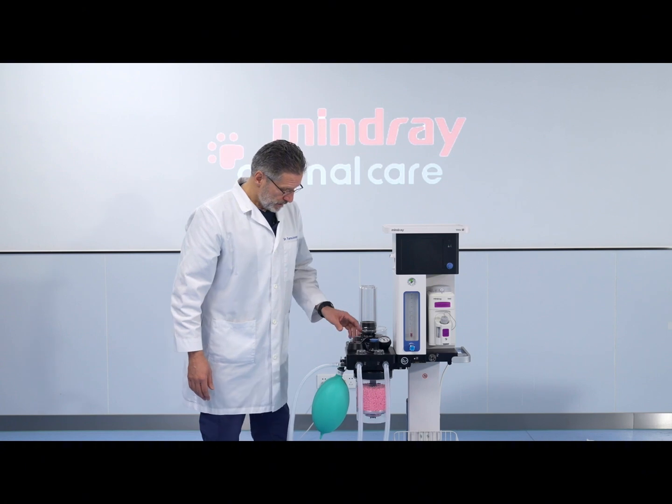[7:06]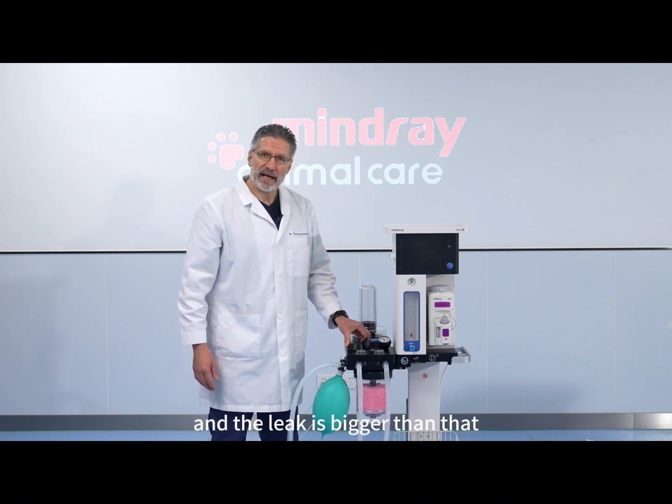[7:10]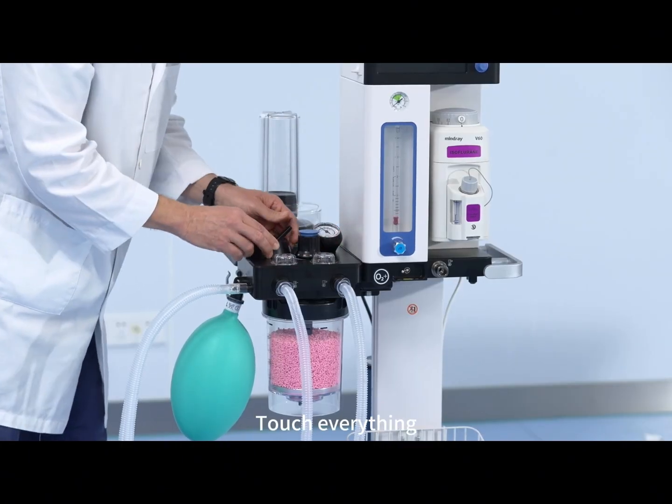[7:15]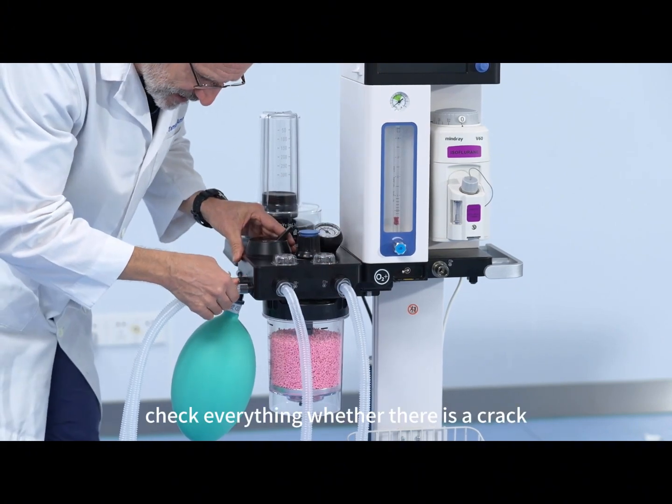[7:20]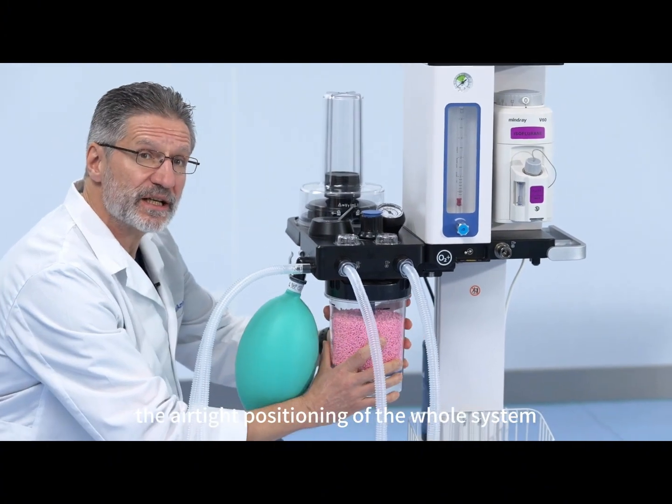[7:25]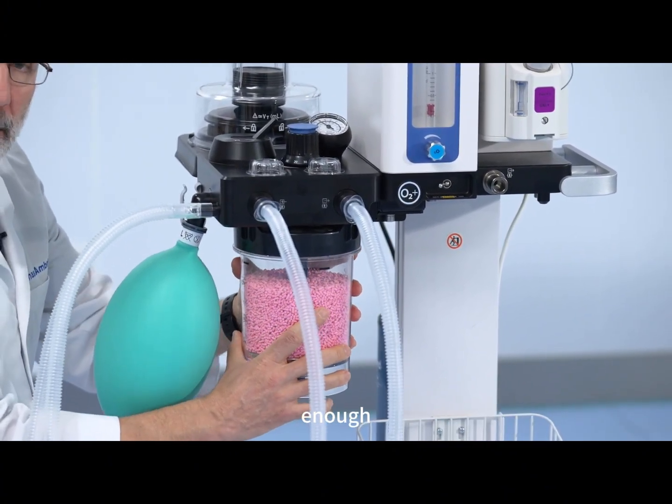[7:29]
It's commonly recommended that 200 milliliters per minute is the maximum leak that can be allowed in a small animal anesthesia machine. If you have a problem with that and the leak is bigger than that, you have to recheck the whole system again. Touch everything, make sure everything is in the right position, check everything, whether there is a crack, check the airtight positioning of the whole system. Sometimes you find that it's not turned on tight enough.
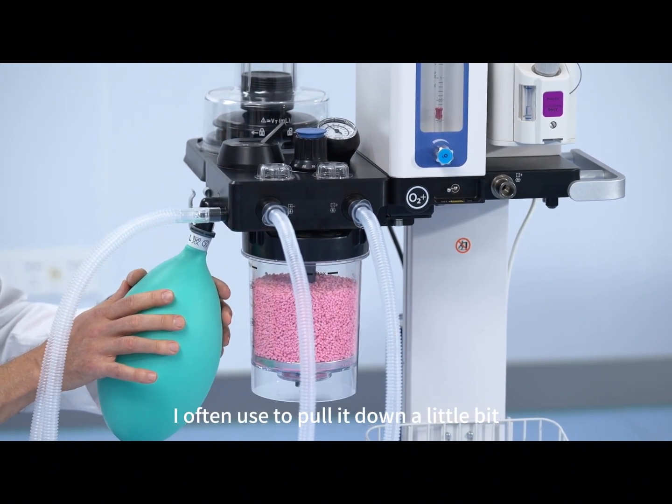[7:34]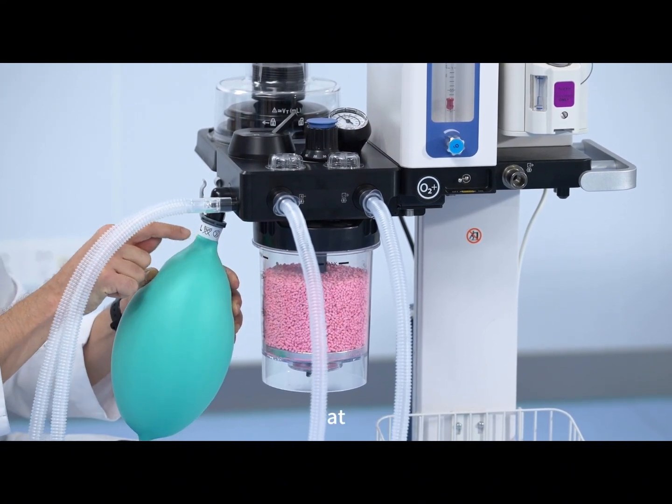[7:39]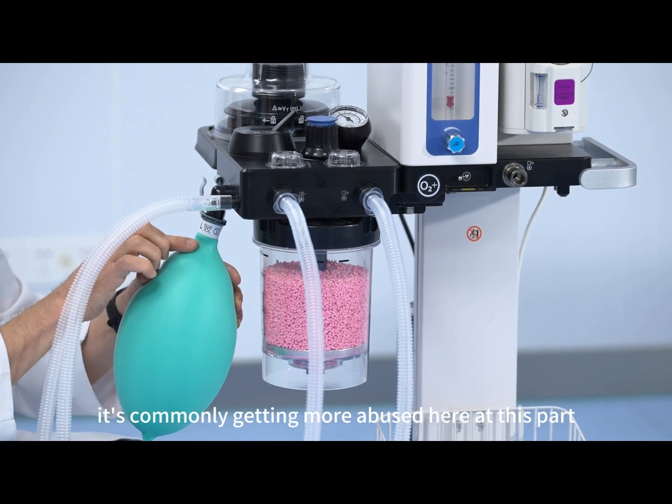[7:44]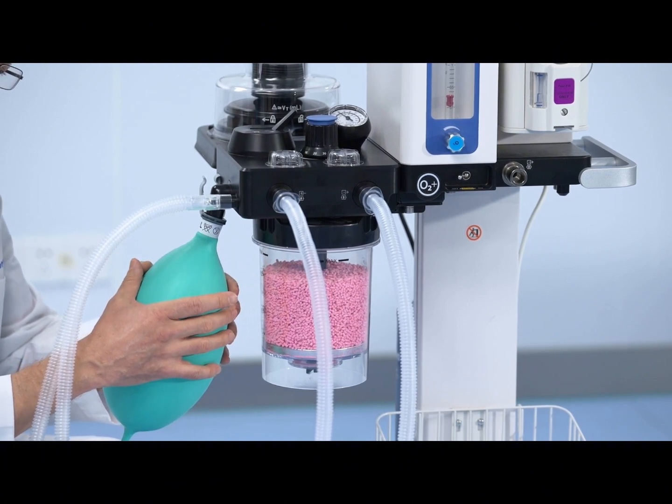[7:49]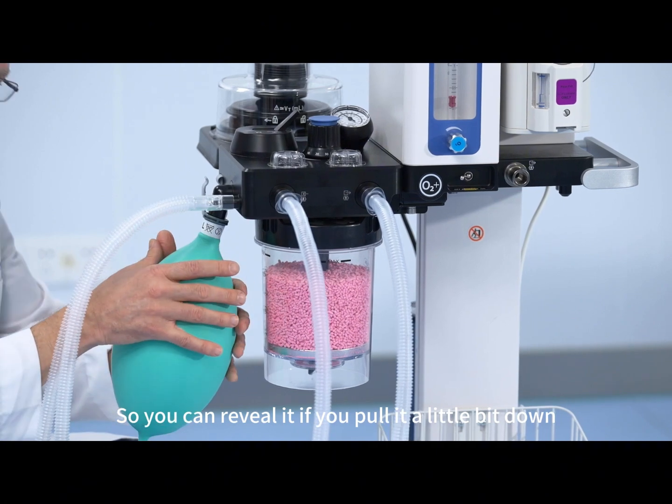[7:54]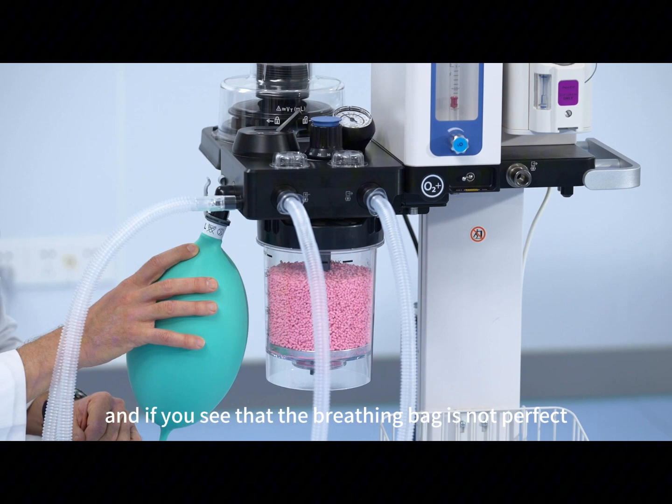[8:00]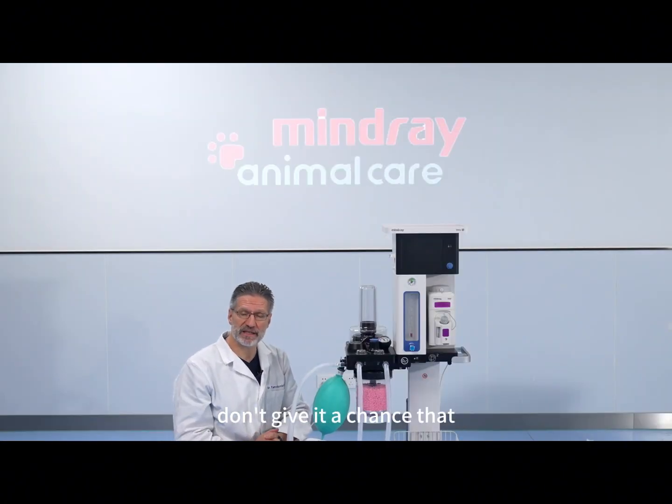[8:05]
And you can check the breathing bag. I often pull it down a little bit. It reveals holes at the neck part of the breathing bag. It's commonly more abused at this part, and when they are getting old, there can be holes there. So you can reveal it if you pull it a little bit down. And if you see that the breathing bag is not perfect, I immediately take it off, rip it apart, and throw it away. Don't give it a chance that anybody else will use it later on.
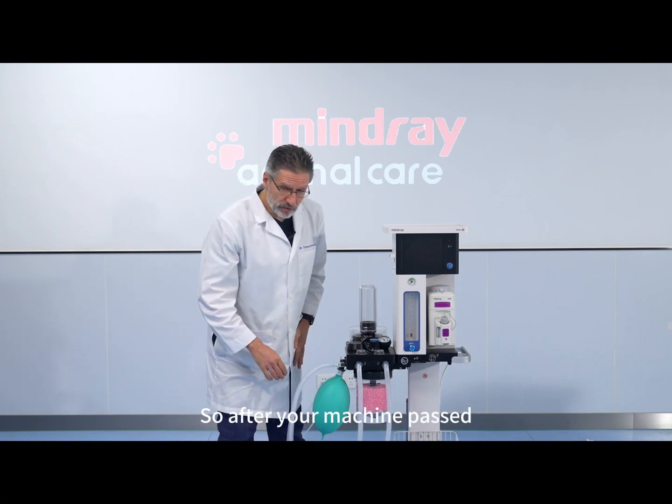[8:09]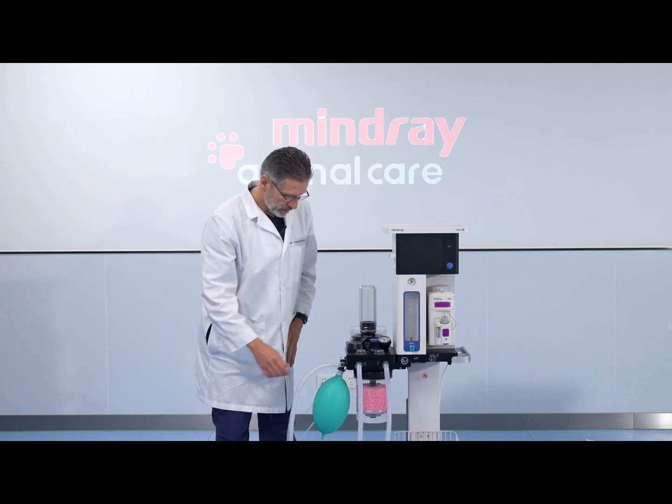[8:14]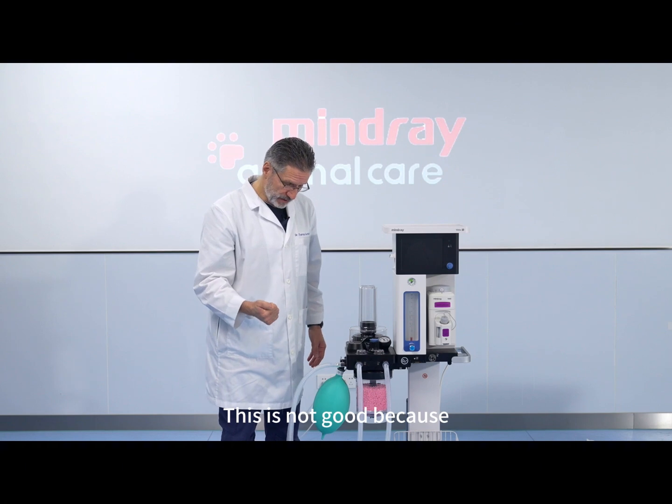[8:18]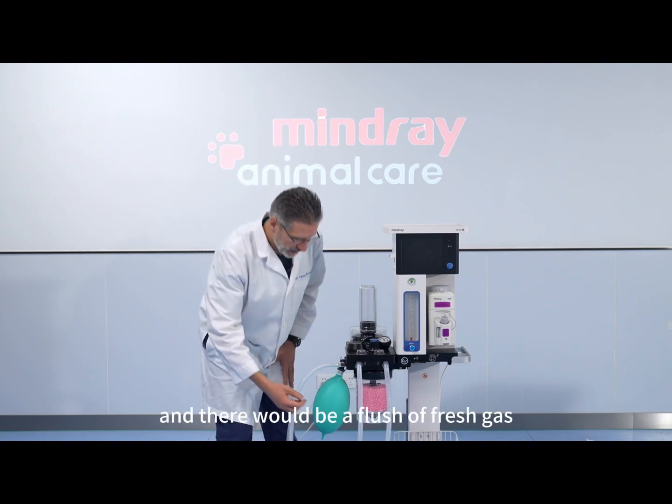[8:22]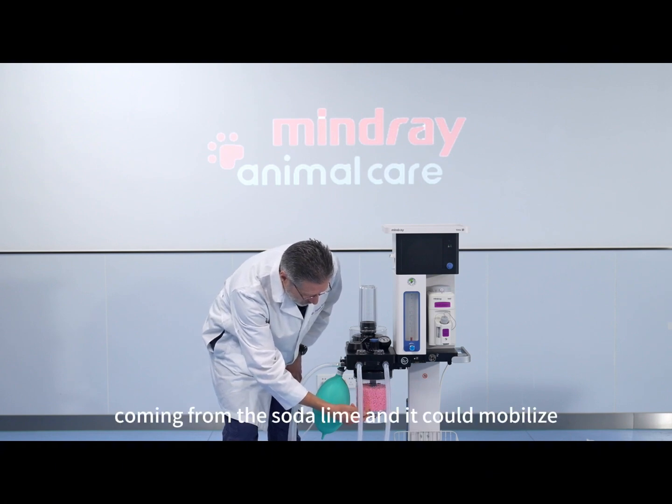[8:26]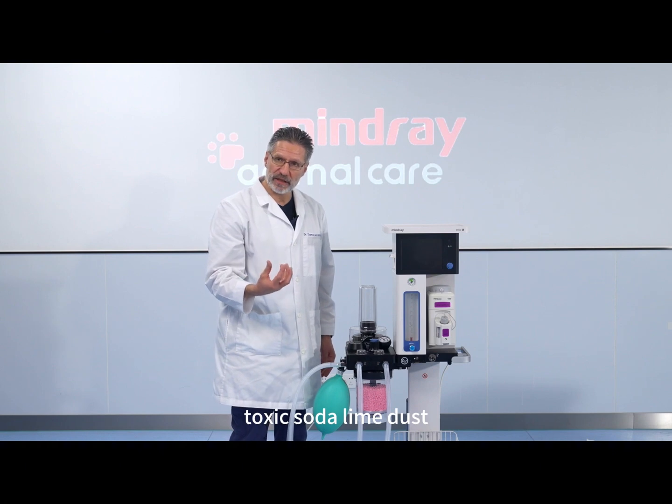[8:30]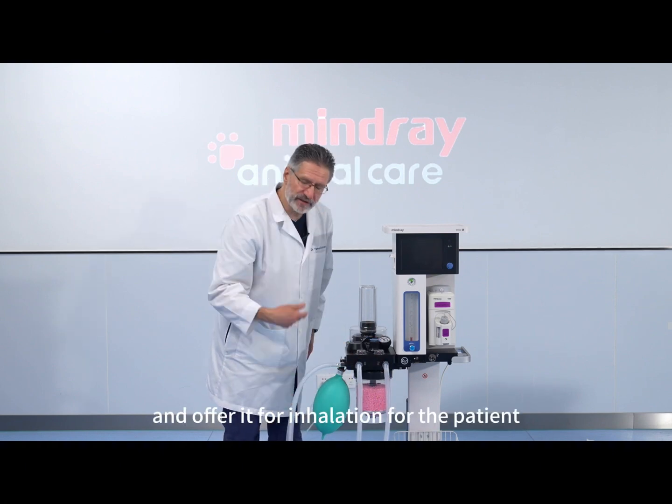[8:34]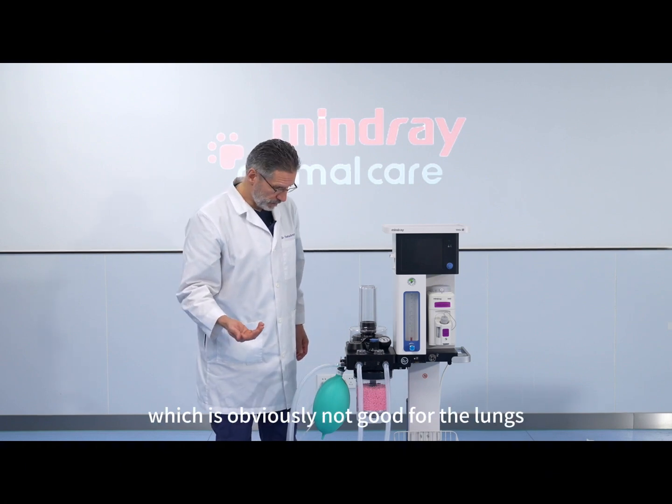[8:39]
So after your machine passed the leak test, some people might just open the Y-piece. This is not good because the pressure would decrease instantly, and there would be a flush of fresh gas coming from the soda lime, and it could mobilize toxic soda lime dust and push it into the breathing circuit and offer it for inhalation for the patient, which is obviously not good for the lungs.
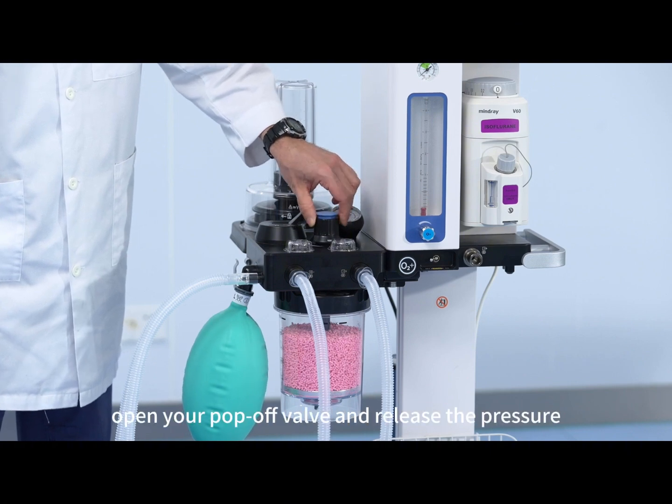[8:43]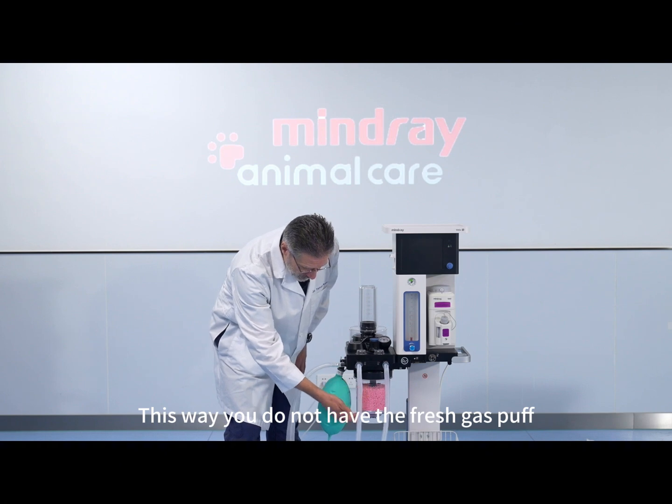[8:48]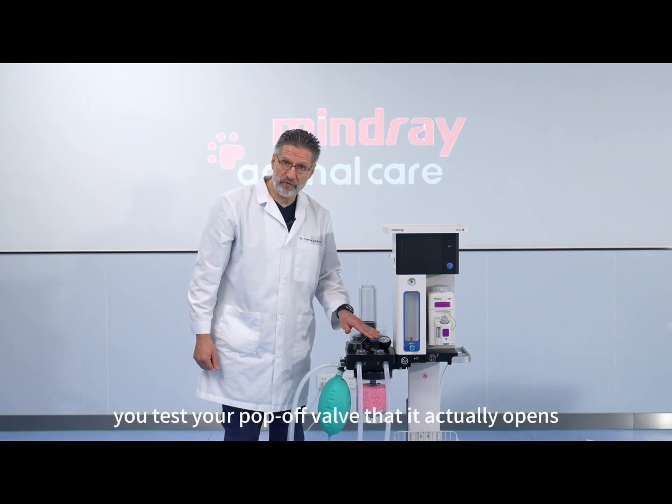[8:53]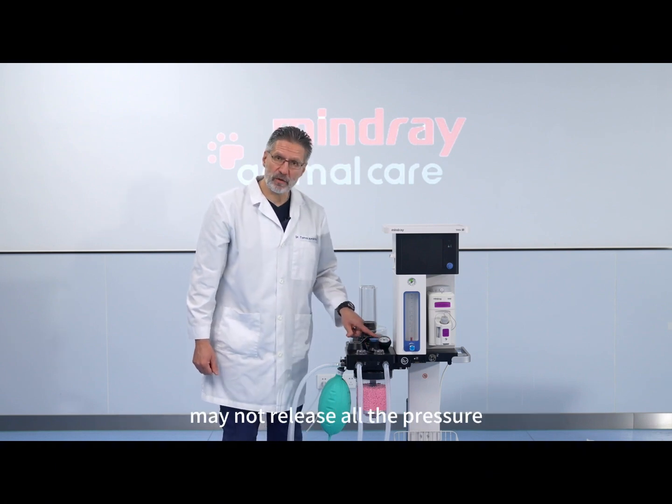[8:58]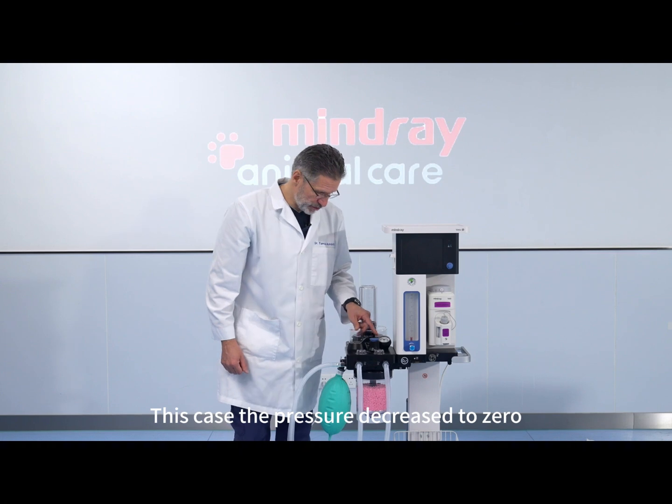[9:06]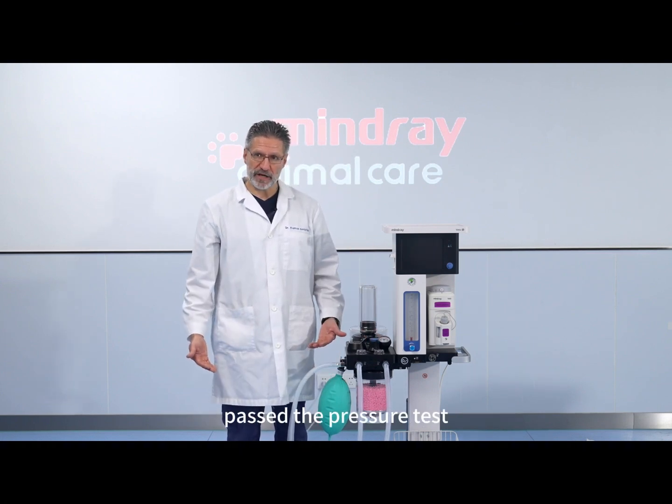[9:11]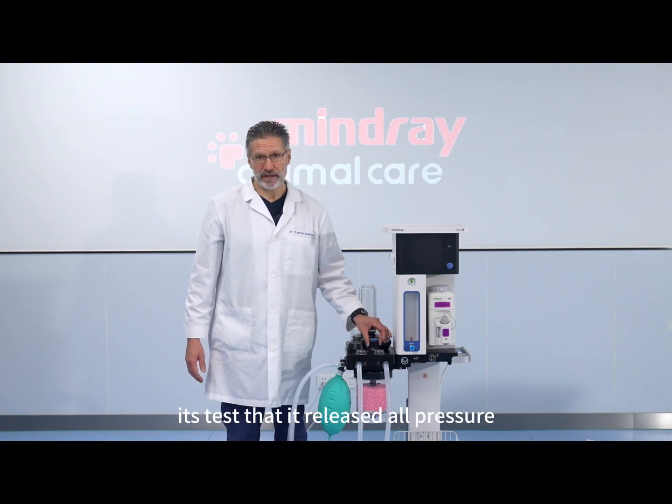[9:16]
So what should you do instead? Gradually open your pop-off valve and release the pressure. This way you do not have the fresh gas puff, and also you test your pop-off valve that it actually opens. A faulty pop-off valve may not release all the pressure, and you need to know about that. You need to fix that system before you connect an animal to it. In this case, the pressure decreased to 0. This system perfectly passed the pressure test, and the APL valve also passed its test, that it released all pressure.